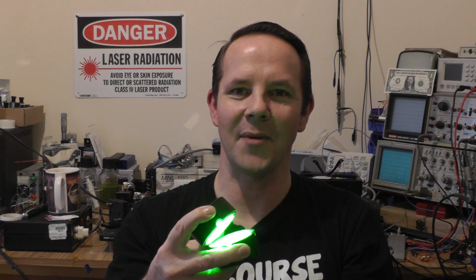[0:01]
In this episode, we're going to take a look at a homemade integrating sphere. So let's stick this on the bench and take a look.
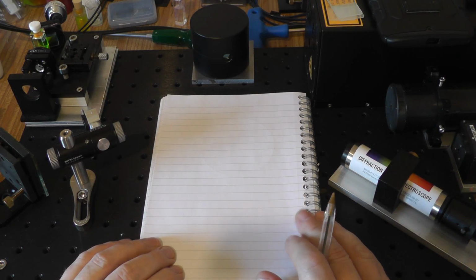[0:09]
In a previous video, I was trying to measure dye laser output with the Raspberry Pi spectrometer, essentially its wavelength range. The way I was doing that was pointing the spectrometer and the dye laser at a non-fluorescent target, which comprised PTFE tape. In the video, I called it poor man's Spectralon, and indeed it is. It's 99% reflective, very, very white, and it doesn't fluoresce. It's an almost ideal target.
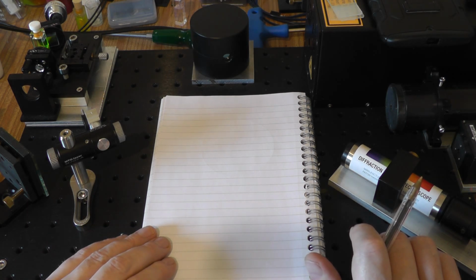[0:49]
Now, Spectralon itself is hundreds to thousands of dollars, and so PTFE is a quick and dirty way of building a suitable target. Somebody suggested in the comments that a better way of doing that would be to use an Ulbricht sphere. I googled that, and it actually turns out that's an integrating sphere. And the way it works is really, really cool.
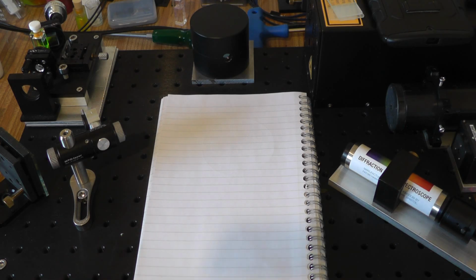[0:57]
If we take a look at the Wikipedia article real quick, it's basically a hollow cavity that's covered on the inside with a diffuse white reflective coating. The coating for these things really is the secret sauce, but it's not that secret. The stuff's been out for years. So let's look at how it works in practice.
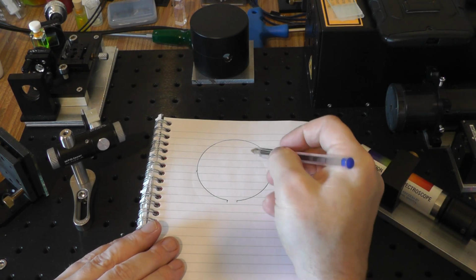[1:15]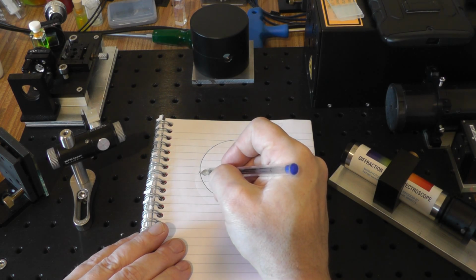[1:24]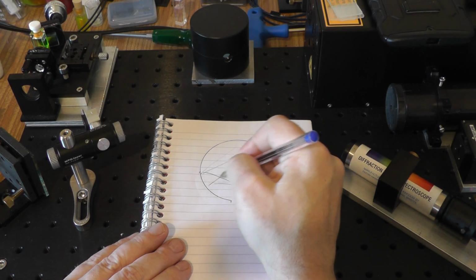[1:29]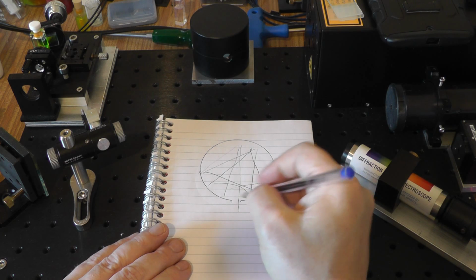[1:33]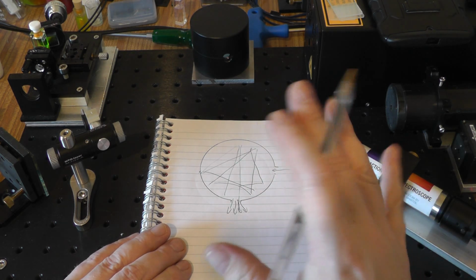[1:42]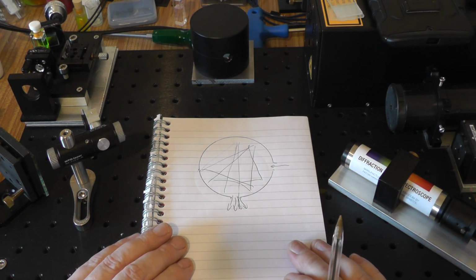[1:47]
If I have a sphere and it's coated, let's imagine we coated it with Spectralon on the internal surface. If I shine a laser in here, it's going to hit the wall at the far end, and then scatter off in all directions, all the way around the sphere, and bounce around forevermore until finally it finds its way out of the other hole. And we end up with a very, very diffuse field of light that should be very easy to point a spectrometer at without having to worry about artifacts in the beam or any other weirdness going on. So that's what I set out to do.
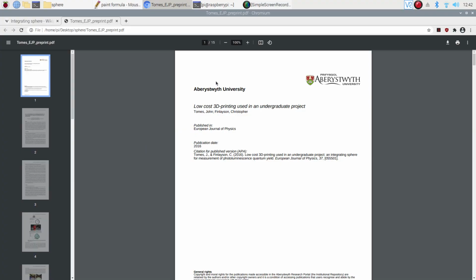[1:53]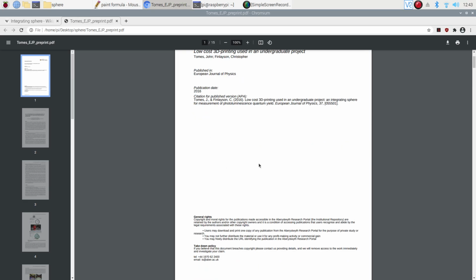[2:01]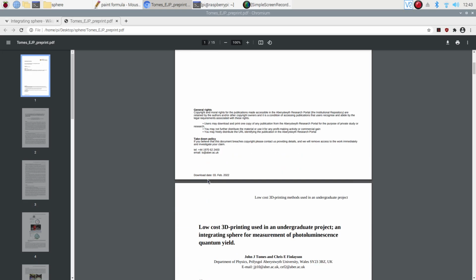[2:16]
We'll take a look at a couple of academic papers really quick. So here's an academic paper. It was printed by Aberystwyth University, where a bunch of undergraduates set out to create an integrating sphere for little price. In fact, if you look up integrating spheres on eBay, they're incredibly expensive. Even secondhand, you're looking at about $500. And if you want to buy one brand new, it'll run into thousands of dollars for what is essentially a hollow ball with a layer of paint on it and some holes in the side.
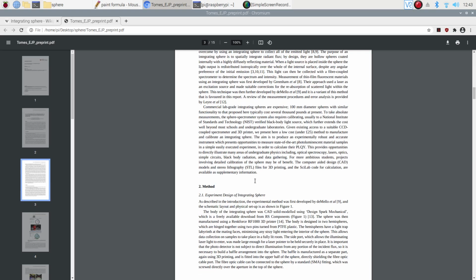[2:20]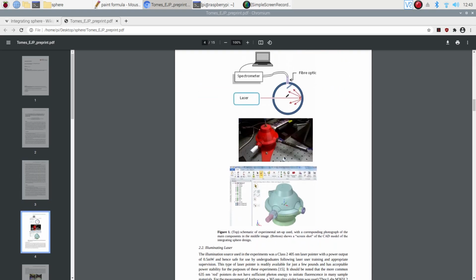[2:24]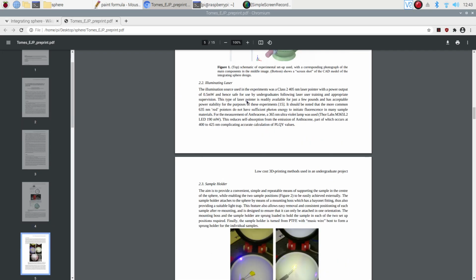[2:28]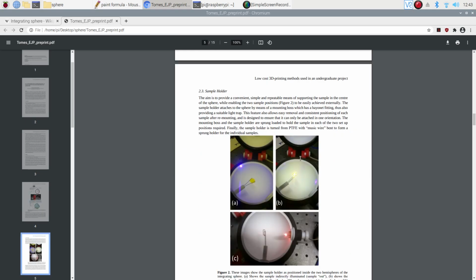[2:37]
So it's actually a really, really cool paper. And if we scoot through there, we'll see some money shots. So there's a little integrating sphere. There's the 3D thing that they created. There's the model. I think the 3D model is actually available on the internet. So if any of you guys own a 3D printer and you just want to build an integrating sphere, you can just rattle one out on your printers. Some nice little pictures down here.
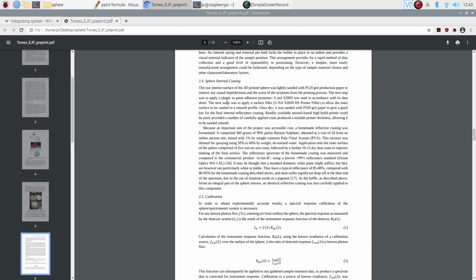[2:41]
Excellent. The good thing about this paper is it tells you how to make the internal coating. And very simply, it's barium sulfate, which you can buy off eBay. You want reasonably high purity barium sulfate, and you mix it with 1% by weight PVA glue, which for US viewers is Elmer's glue. It's just wood glue. Mix it in with a bit of water and maybe a little bit of alcohol to aid evaporation, and just spray it on the inside surface of your sphere, and you are literally done.
They came out with a reflectance of between 90 and 95%, which depends on the wavelength of light. It's mostly got a relatively flat response curve, but it's a little less reflective in the blue than it is in the red. Pretty cool. Incidentally, barium sulfate is the same compound that was used in the world's whitest paint that was produced by a university in the States. I think they were using it to try and cool buildings without having to spend money on air conditioning, by painting roofs with super, super white paint. And this is exactly the stuff that was used in there.
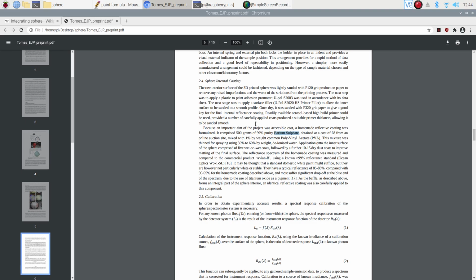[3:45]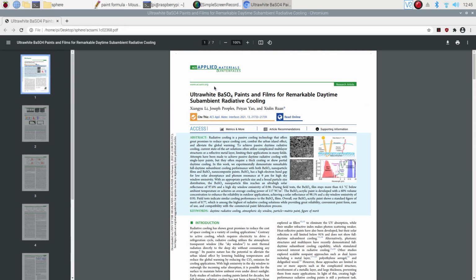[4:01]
Barium sulfate is the answer. It's often used in diffuse reflectors inside of lasers, for flash lamp pumped lasers, as the diffuse reflector around the cavity. Pretty cool. And the paper's well worth a read.
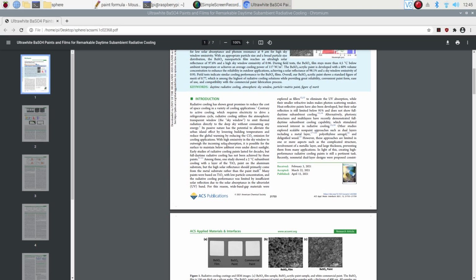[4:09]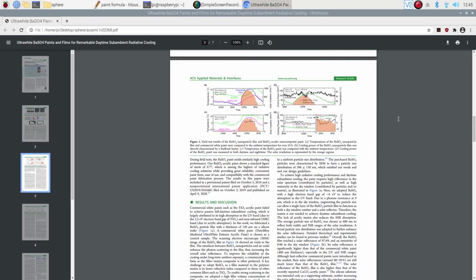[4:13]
This is the paper, and I'll link these things down below. I'll maybe put in the DOI number, but this is the academic paper for the ultra-white paint that they were using to cool buildings, which makes for a very interesting read as well. Pretty cool stuff. I suppose we could spend maybe an hour and a half talking about paint formulations for things. It's actually quite an interesting topic. I never thought it'd be anything that I would be particularly interested in, but suddenly I have a need for an ultra-white flat paint.
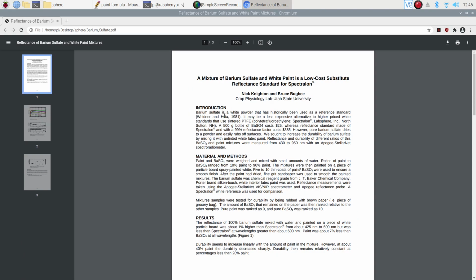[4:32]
So there we are. Just to finish off, I mentioned before that this isn't some kind of magic formula. Barium sulfate has been in use since at least 1981, according to this paper, as a reflectance standard. And it actually compares it here: a 500 gram bottle of barium sulfate costs $25, whereas Spectralon, given that this is an old paper as well, is nearly $400. So if you're interested in doing homemade optics and you really can't afford to shell out for Spectralon, and you want something super white, super high reflectance and super diffuse, then barium sulfate is absolutely the way to go for this.
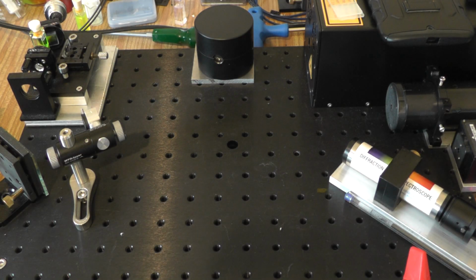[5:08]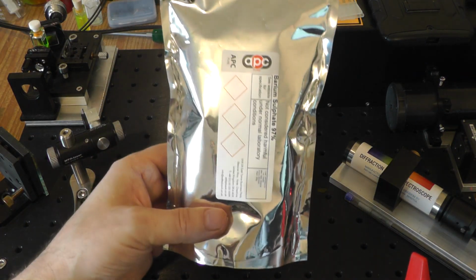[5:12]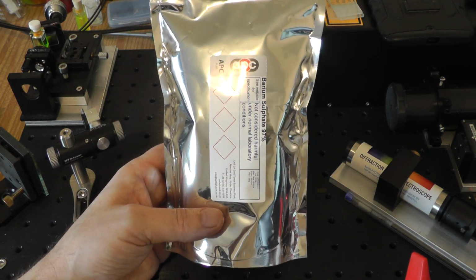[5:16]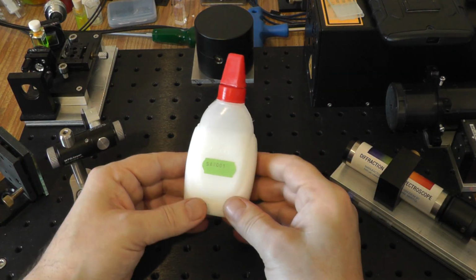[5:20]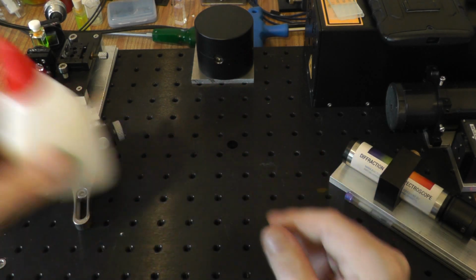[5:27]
So as I've said before, the paint mixture is a not-so-secret sauce, and it's very, very easy to buy the ingredients. I have here a big bag of barium sulfate that I got off eBay very cheaply. It's 97%, which is close enough for me. And I've also got PVA glue. As I said before, it's Elmer's glue in the States. It's the glue that children can eat and it won't kill them.
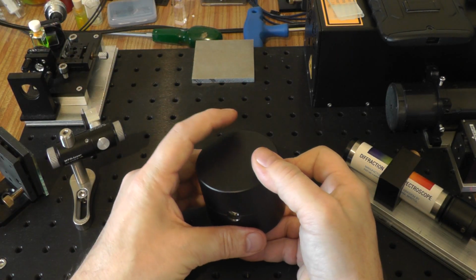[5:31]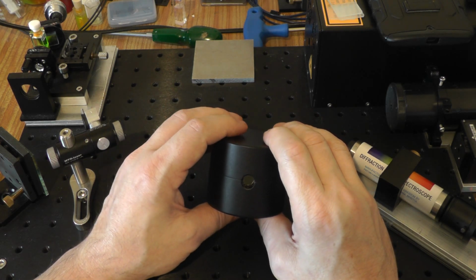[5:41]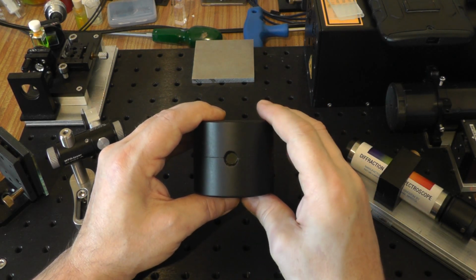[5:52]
So this is my integrating sphere. When I wanted to build a sphere, I didn't want to have to turn one on the lathe. I did want something made out of metal so it was good and heavy and would sit on my bench. But I did a little bit of shopping looking for ball molds, and apparently cannonball molds are a thing, even in the UK. So I got a cannonball mold made of brass. I faced the ends in the lathe because they had attachments for handles, widened out the port that you would pour lead into, and then drilled another port on the other side, and painted the whole thing flat black.
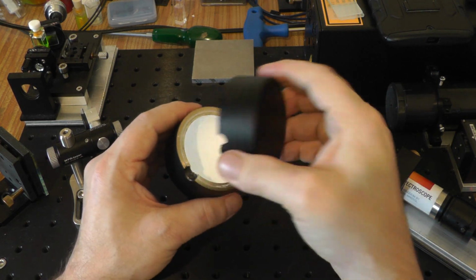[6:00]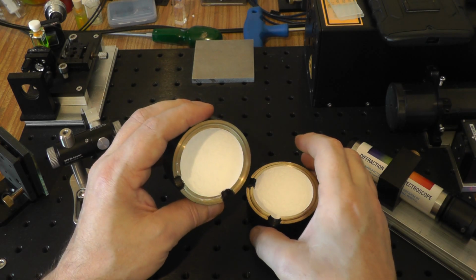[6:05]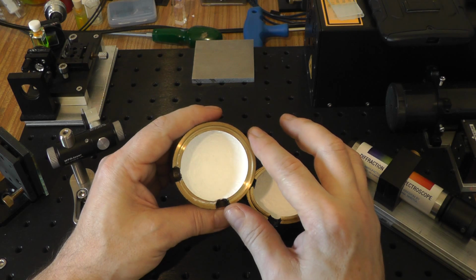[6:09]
On the inside, I've got my coating, and as you can see, it's incredibly white. It really is very, very white. I tried this in a spray gun to begin with, but managed to gum the thing up. The barium sulfate particles are really quite large, even after pulverizing them in a pestle and mortar. So what I did was cheat. I just mixed it up and stippled it on with a little tiny paintbrush, and did several coats over several days until I'd built up a nice thick coating.
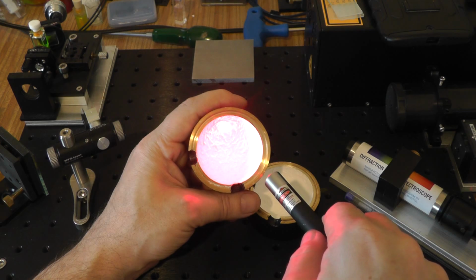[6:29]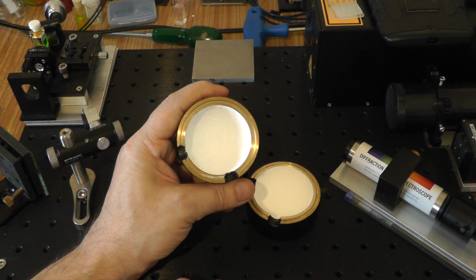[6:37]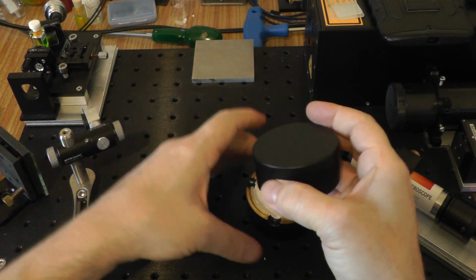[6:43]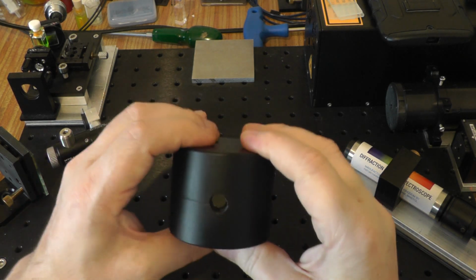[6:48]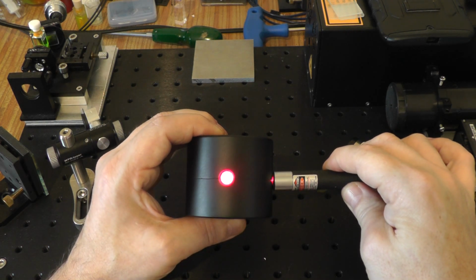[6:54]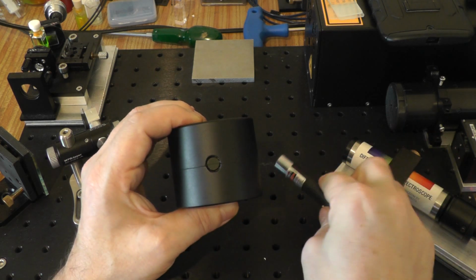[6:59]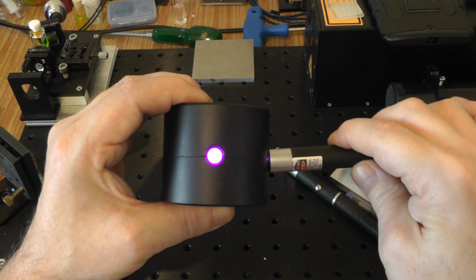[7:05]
If we shine a laser pointer at it, we can see it illuminates half of this entire hemisphere quite easily. We'll try it with a violet laser pointer just because we can. Excellent. If I reassemble it and we point the laser pointer into one of the ports, we can see that we've got a really nice diffuse output that we can point the spectrometer at. Absolutely fantastic. I'll just try it with a violet laser pointer as well so we can see that. Yeah, so we've got this really nice diffuse target to look at. Excellent.
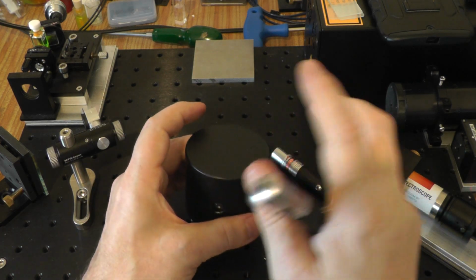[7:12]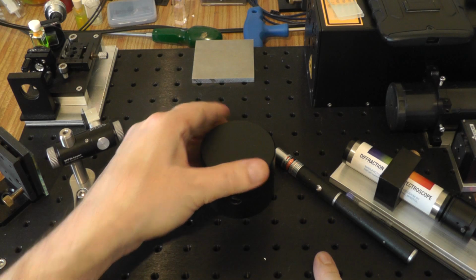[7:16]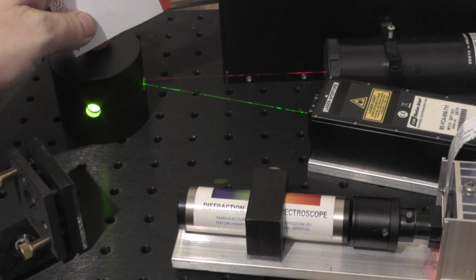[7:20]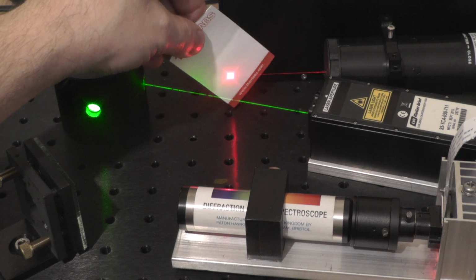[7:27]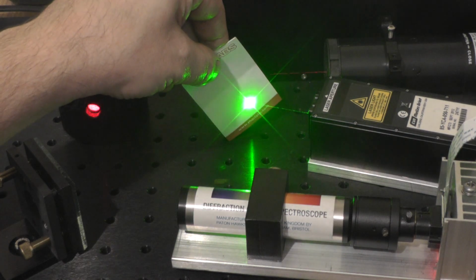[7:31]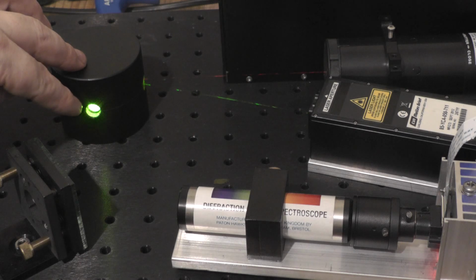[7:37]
So let's set up an experiment, fire this on the bench. We all want to see what this will do with lasers, right? So let's do that. I have the homemade integrating sphere set up on my optical bench here, and into it I'm directing the light from two lasers as a quick test. I've got a 632.8 nanometer helium neon laser that lases in the red, and I have a 561 nanometer yellow-green laser that's pointing into the sphere. We can see that the output of the sphere is very, very uniform.
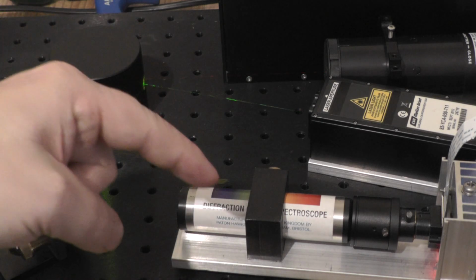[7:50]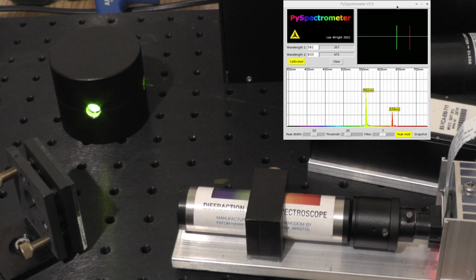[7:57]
It's a nice uniform field that we can easily point the spectrometer at. And I'm using a small mirror mount here to direct the light towards the front of the Raspberry Pi spectrometer. If you've not seen the Raspberry Pi spectrometer before, I will link that video down below. Definitely check that out. It's a really, really cool project. Let's take a look at the software real quick and see what we're looking at here.
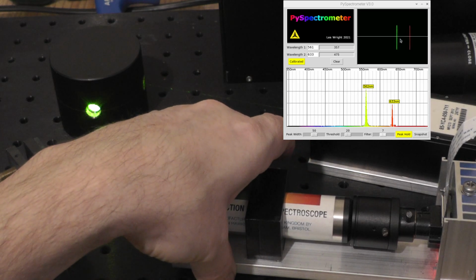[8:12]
We can clearly see two clearly defined peaks in the graph window down at the bottom, and we can see from the live video image at the top there that we've completely and utterly minimized any sort of speckle that we were getting before. We can move the spectrometer side to side within a couple of degrees, and everything is still just peachy, which is absolutely fantastic.
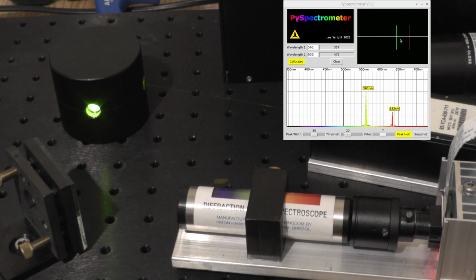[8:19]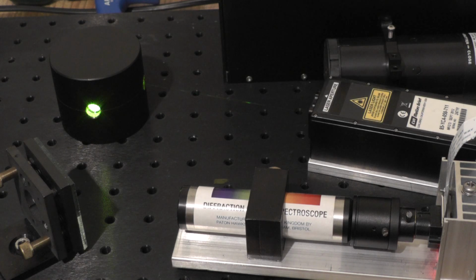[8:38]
This was exactly what I was looking for, something that was very, very easy to point at laser spots, as it were, without having to adjust things by the micron to try and get the maximum light from the laser output into the spectrometer itself. Absolutely fantastic. So what I'll do now is rearrange things on the bench. We'll set up the dye laser. We'll do a quick test of the spectrum from it and see how well this performs. But so far, so good.
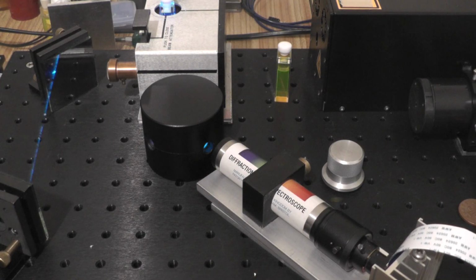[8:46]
So I have set up here a dye laser that's been pumped by a nitrogen laser. Both of these lasers are featured in other videos. I'll link them down below if you want to see them. In the dye cuvette itself, I have Coumarin 1, which will lase everywhere from about 490-odd nanometers all the way, quite a ways down into the blue. So it'll go blue to blue-green, almost to the green, as its tuning range.
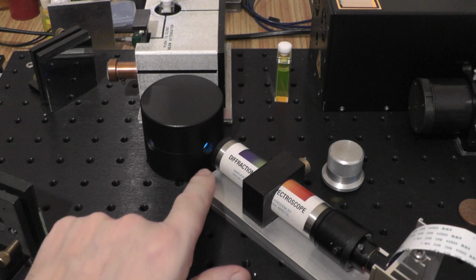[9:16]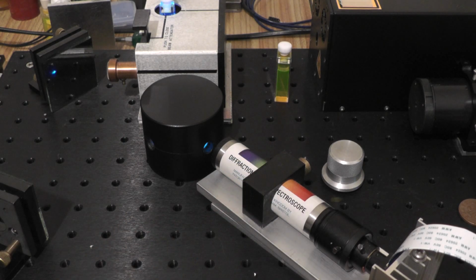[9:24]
And we're bouncing this off two mirrors here into the homemade integrating sphere. And then pointed at the aperture of the integrating sphere, I've got my homemade Raspberry Pi spectrometer, which I'll also link down below if you're new to this channel. But let's have a look at the software and see what we can see. We can see a nice little peak at 495 nanometers, right on the very edge of blue-green. Excellent. Because it's a pulse laser, we'll hit peak hold, and then we'll just have a quick tune through the tuning range.
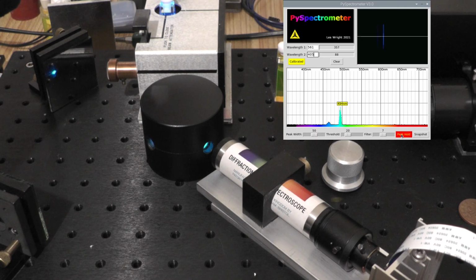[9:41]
So I've got to tune relatively slowly because it is pulsed, and I don't want to leave too many gaps in the plot that we get. But now we're going quite a ways down into the blue. And then deep blue. Nice. This is working out really, really well.
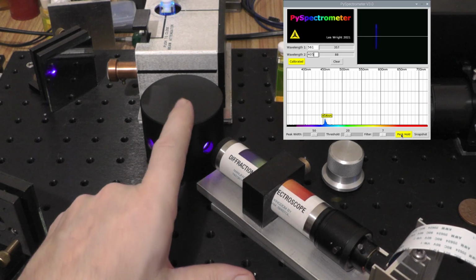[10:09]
Let me just turn off peak hold a minute. The whole purpose of doing this was to produce a nice wide area that I could point the spectrometer at. And if I move it from side to side, even a couple of degrees, we can see that there's not much change in the output there. Absolutely fantastic. I've lost it now. Oh, easy. Just point it back at the source and we're done.
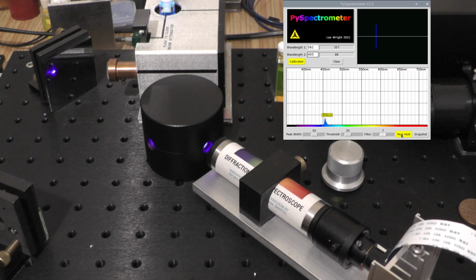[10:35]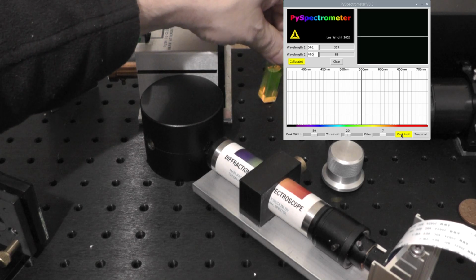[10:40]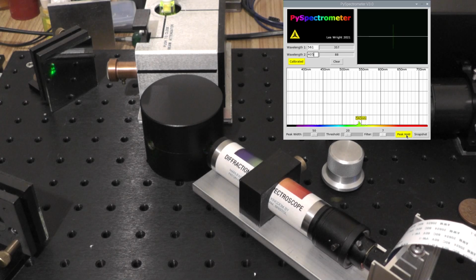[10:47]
With a raw laser beam on a target, this is a real pain in the backside. So to be able to just basically chuck stuff down on the bench and have things kind of work is really, really nice. While we're about it, we'll just swap out the dyes for rhodamine 6G, which is tunable from green to yellow. And we'll just give that a quick tune as well. So I've just loaded rhodamine 6G into the dye laser there, and we'll begin the tuning process. So let's hit peak hold and tune all the way through and see what we get.
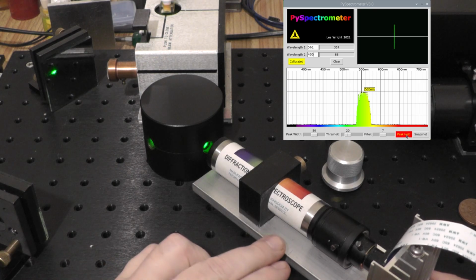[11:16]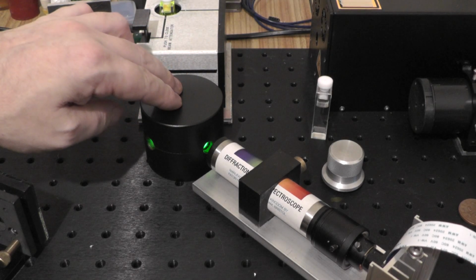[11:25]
Again, I'm kind of rushing with this, but it'll be good enough for this video. Awesome. There's the complete tuning range of rhodamine 6G, and once again, really, really easy to set up, really, really easy to point the spectrometer at our source now. It has to be said, out of all the projects I've done, this is probably one of the easiest, and at the same time, one of the most useful in terms of being able to measure things in a sensible way. Absolutely fantastic.